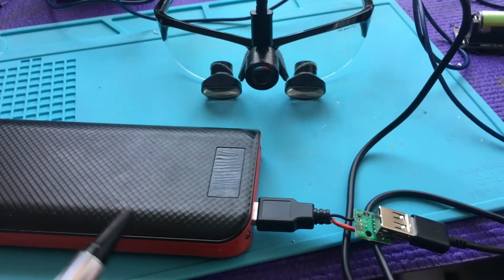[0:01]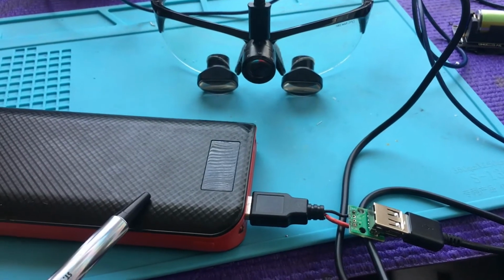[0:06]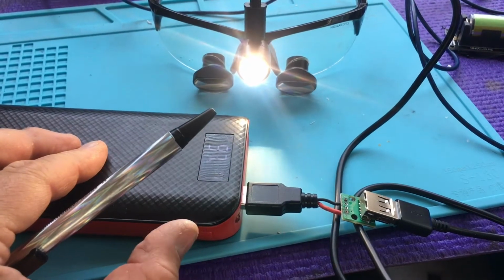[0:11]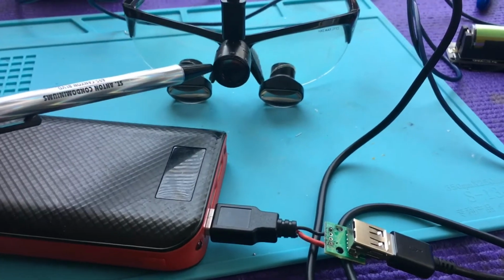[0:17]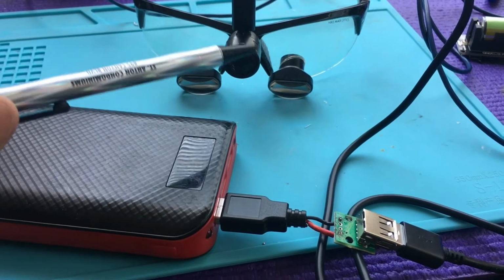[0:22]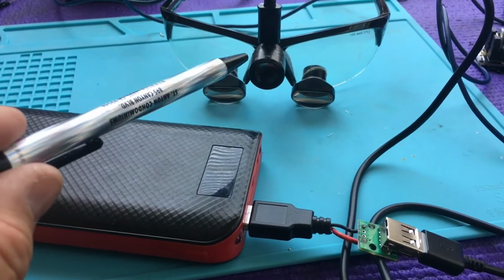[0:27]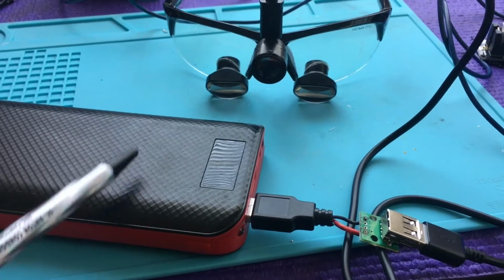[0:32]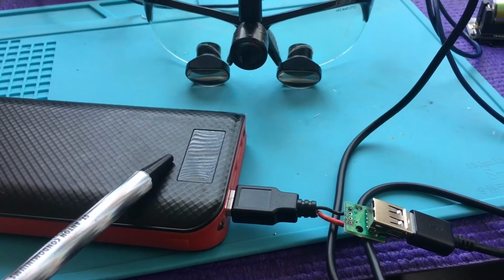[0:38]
How can we power Designs for Vision loupe lights with a standard battery pack? Here's some Designs for Vision loupes with a 5-volt light that most hygienists and dentists use. We're going to connect in this video these glasses, these loupes with the light, up to a standard 5-volt charger pack used for cell phones.
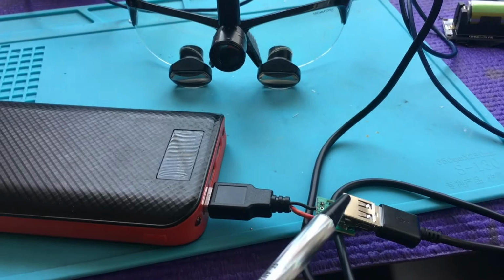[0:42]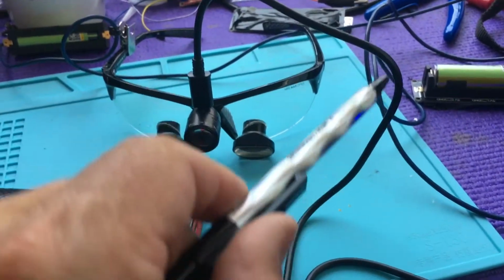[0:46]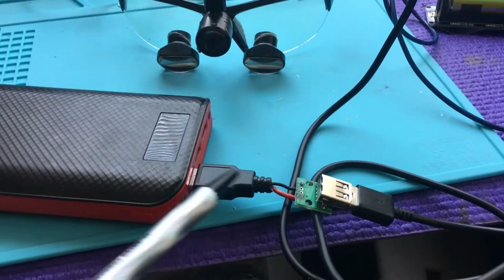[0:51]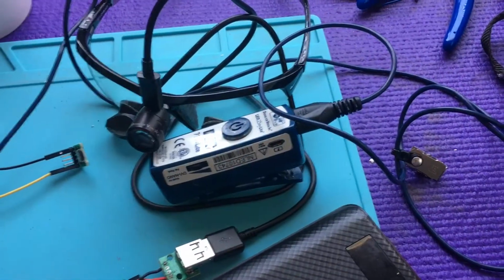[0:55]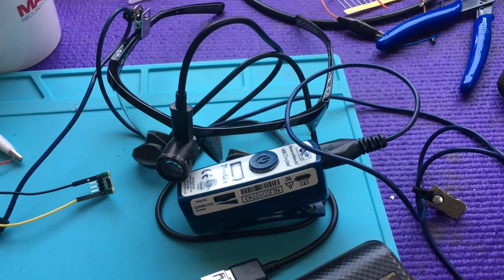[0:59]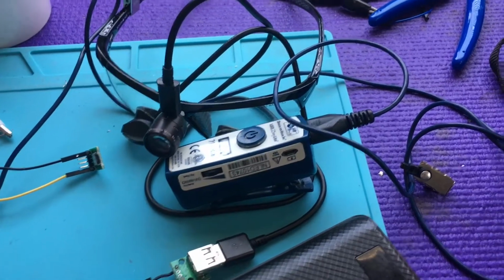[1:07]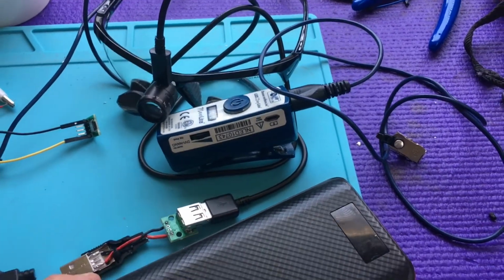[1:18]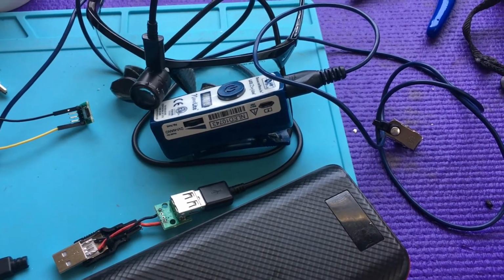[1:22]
And the only thing we're going to change is this crossover cable, and we are going to use a standard Android USB cable for this experiment. Stay tuned. Video on how to test your Designs for Vision components so you know which thing may not be working before you try to order parts. The other thing is you may want to rig something up in an emergency to get you through the day so you can order the parts and wait for the parts to come, maybe saving you some emergency freight.
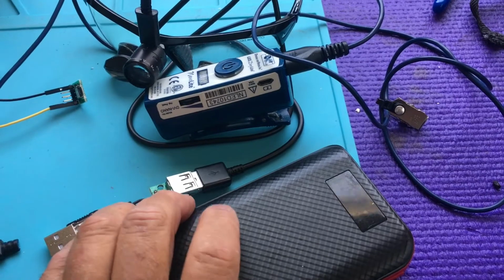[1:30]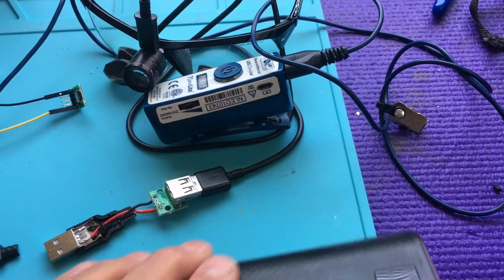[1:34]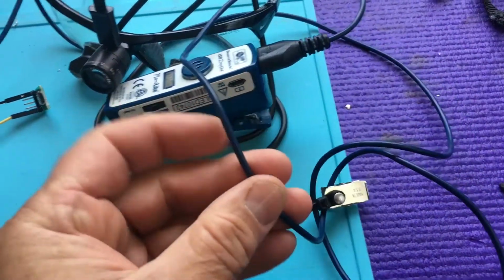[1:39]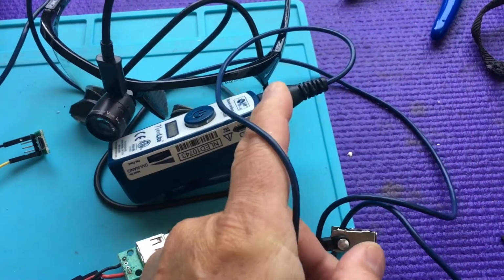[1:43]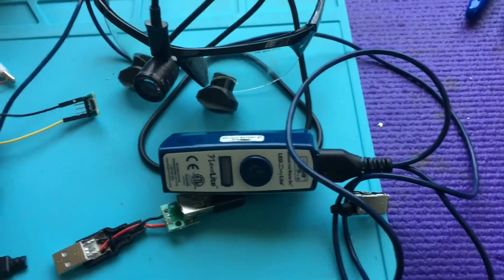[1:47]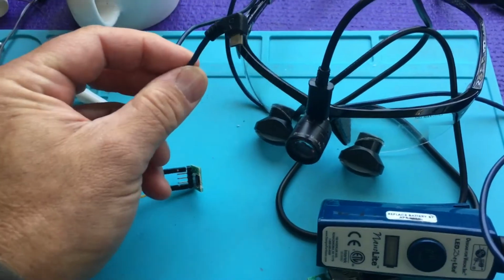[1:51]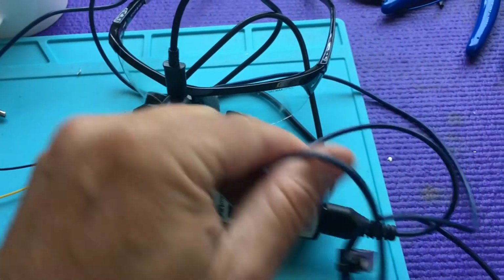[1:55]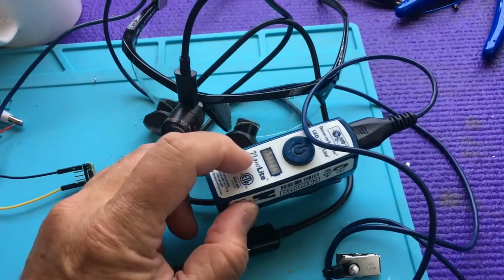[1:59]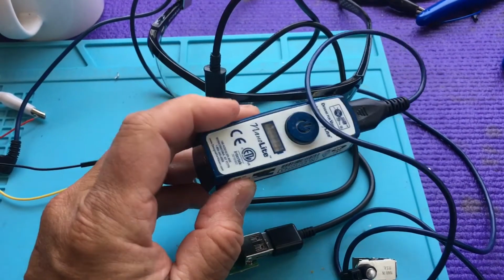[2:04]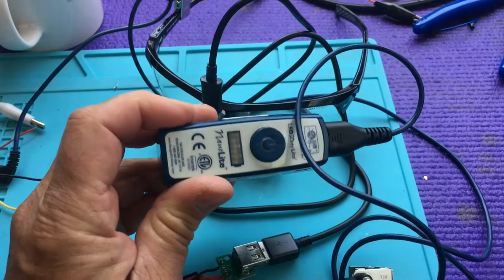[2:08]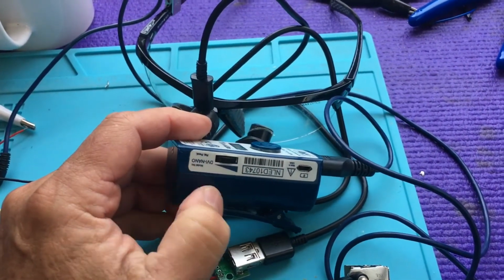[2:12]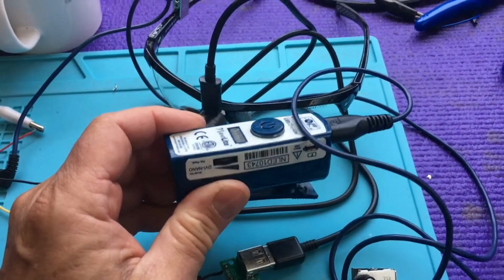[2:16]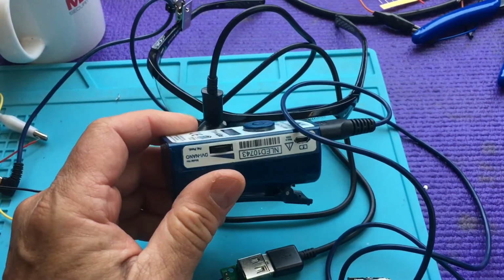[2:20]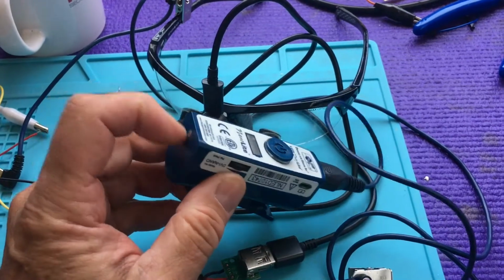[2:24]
So what we're going to discuss in this video is how to test each of these components. Potential failure items are this cable right here that runs to these glasses. The cable could fail, these connectors on each side could have a problem, and this power supply could also fail. This is a high quality power pack with a standard lithium ion battery similar to an 18650, but a little smaller, in this pack here.
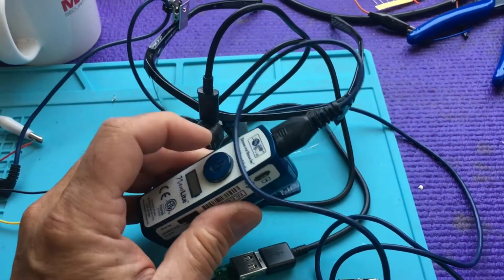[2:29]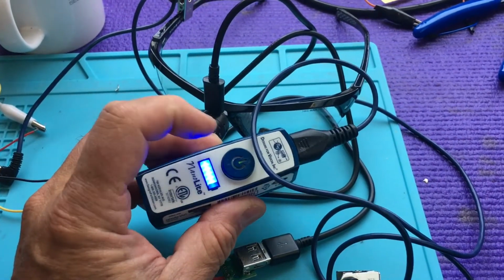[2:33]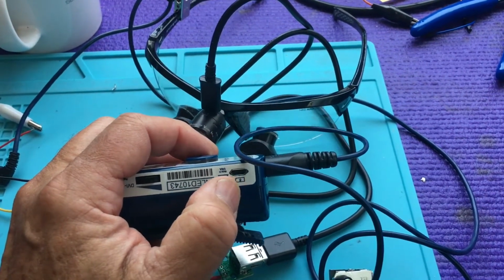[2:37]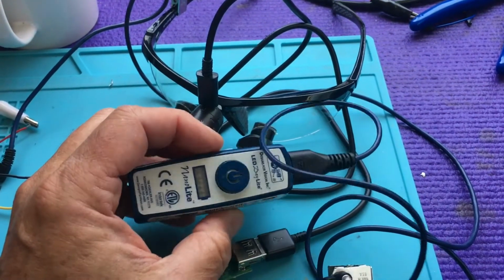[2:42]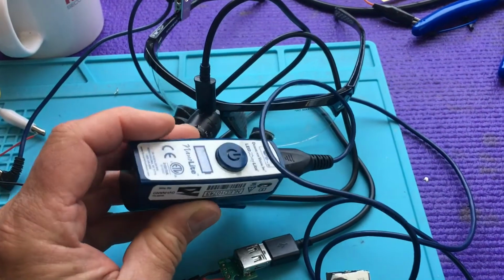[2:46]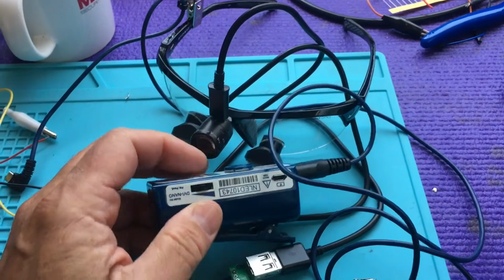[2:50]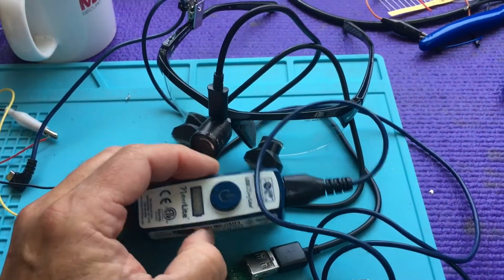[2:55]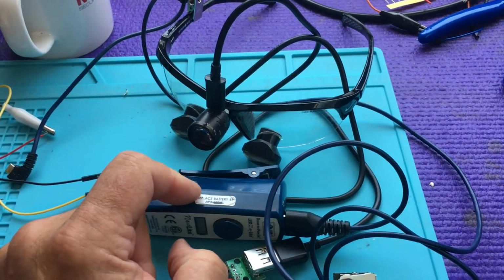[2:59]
Of course, this thing is really high quality. It's got a gauge on it. It's got the standard micro USB connection, and it could fail. The battery could go bad, the connectors could go bad, you could drop it, which happens a lot, and this thing could fail and you're sort of out of luck. So how can we tell whether this thing has failed?
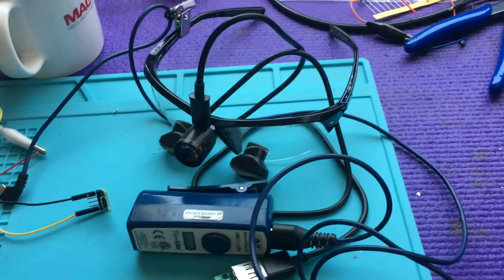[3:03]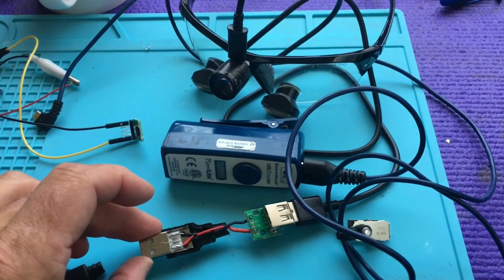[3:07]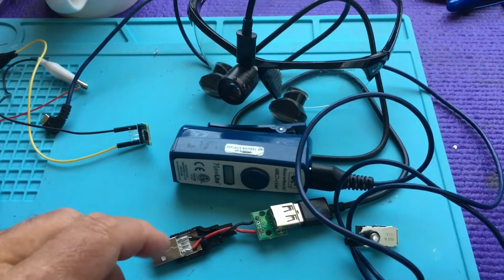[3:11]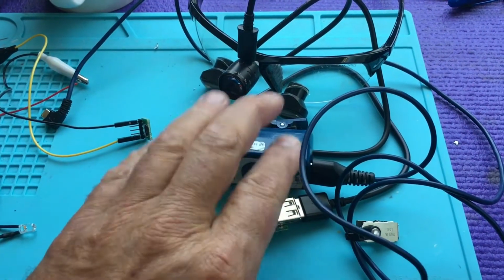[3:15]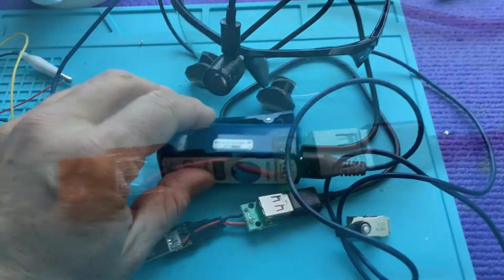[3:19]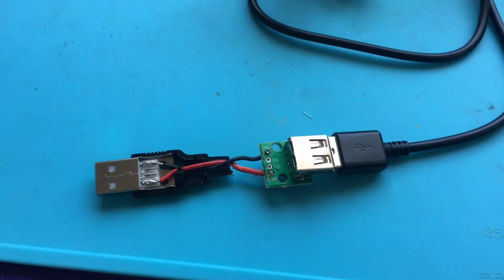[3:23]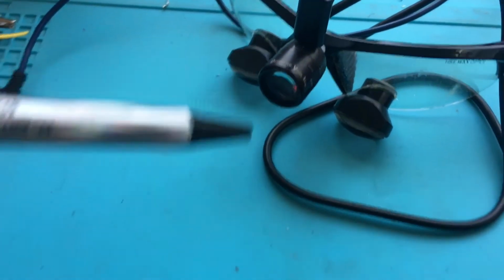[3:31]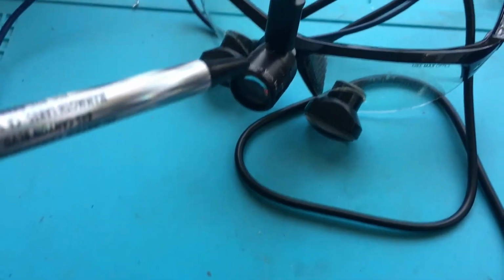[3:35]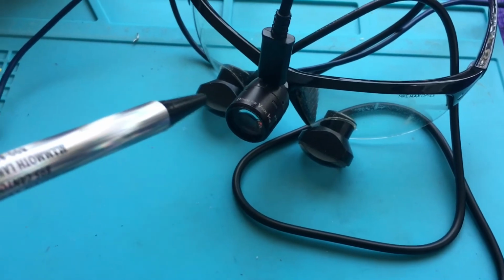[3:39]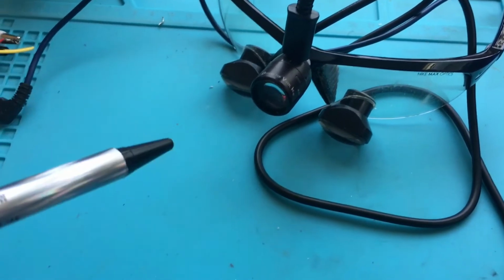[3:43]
So let's discuss how we could test this light with nothing else that's provided by Designs for Vision. Now, just because I've tested this doesn't mean that you're not going to blow up your stuff. So here's where I'm going to warn you: you could blow up this light if you do this wrong. However, I think they did a reasonably good job of design here. It's a high quality light. I think they've designed some protection in, but I do not know for a fact. You could blow up your stuff.
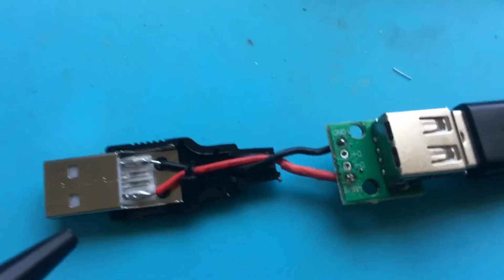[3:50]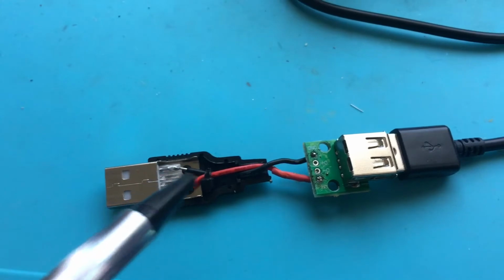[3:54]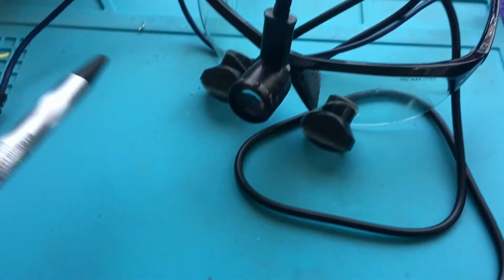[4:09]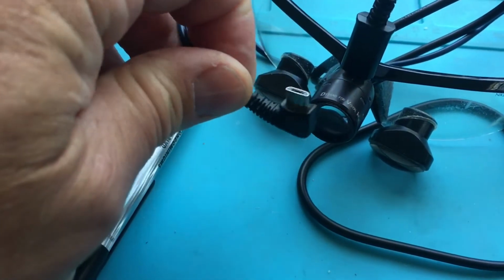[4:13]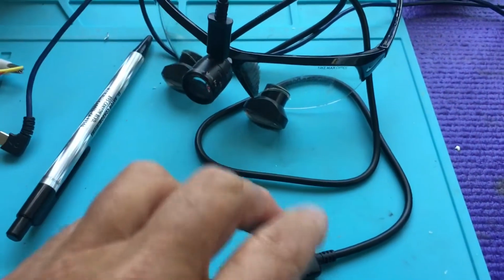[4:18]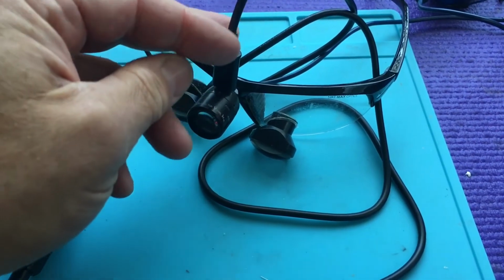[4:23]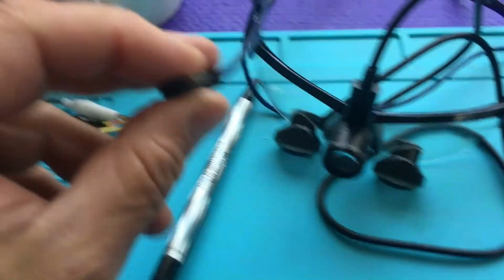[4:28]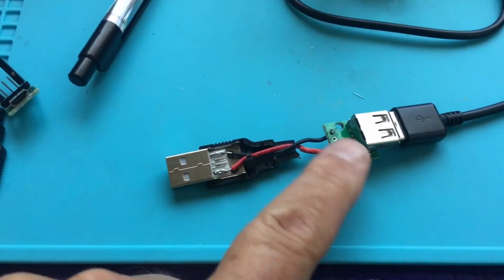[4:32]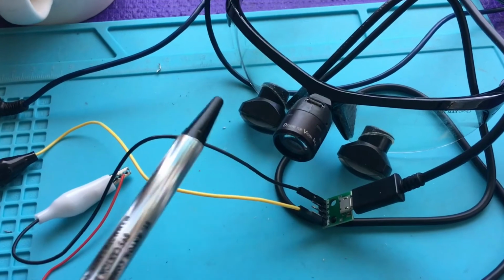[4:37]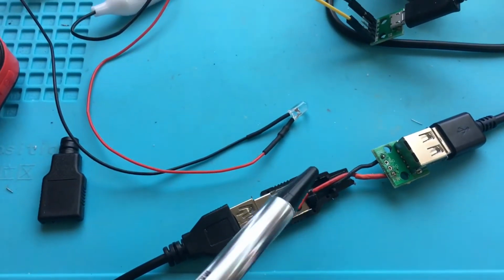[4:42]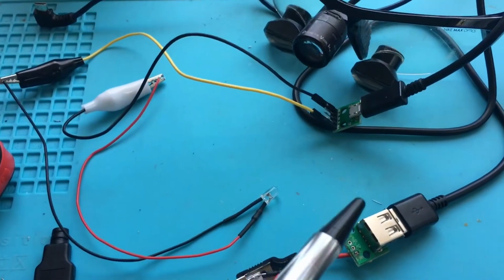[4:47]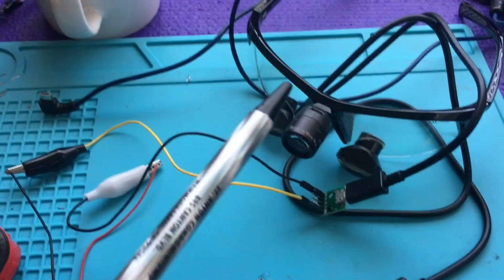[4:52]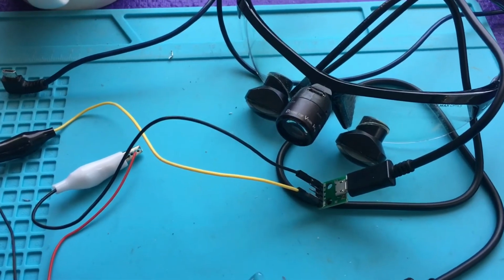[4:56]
So what we do here is we have soldered a crossover cable in this configuration. We're basically reversing negative and positive, and then we're going to power up. Instead of using this cable here, we're going to use our own micro USB. This is the same kind of cable that you can find for Android phones, but I had to engineer this crossover here. We want to make sure we don't blow this thing up with this crossover, which I don't believe you'll do if you mix your crossover. I believe you could just plug a standard USB in this connection and you'd be okay, but I don't think you should do it.
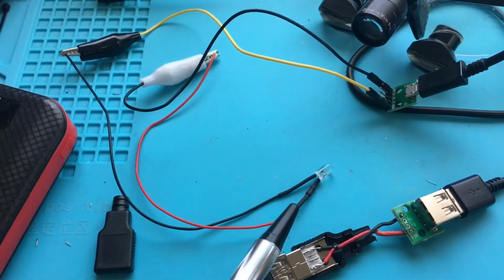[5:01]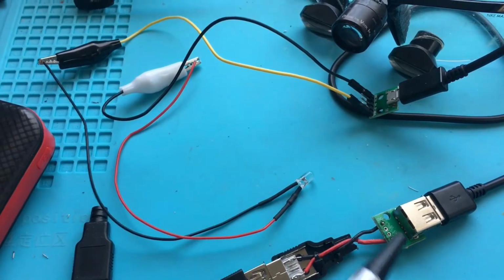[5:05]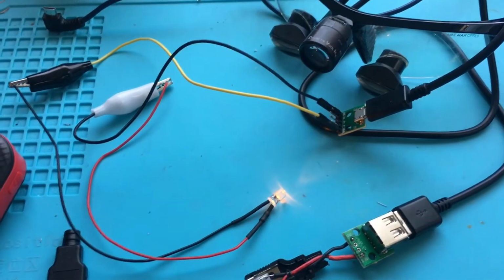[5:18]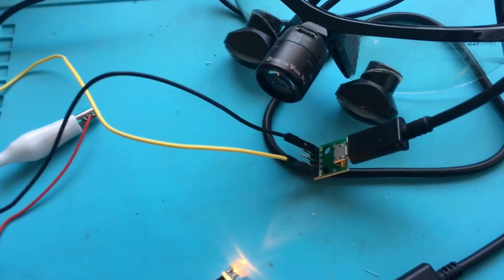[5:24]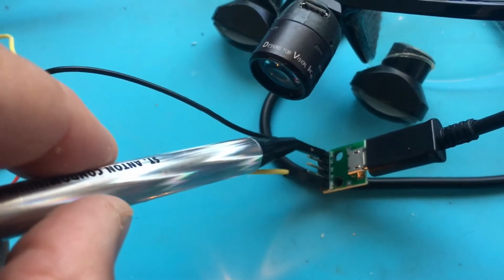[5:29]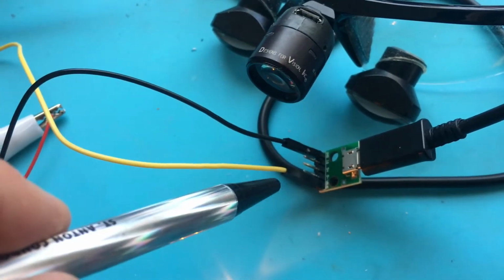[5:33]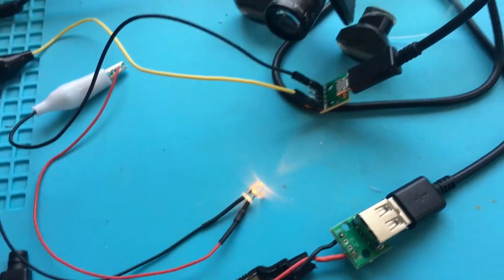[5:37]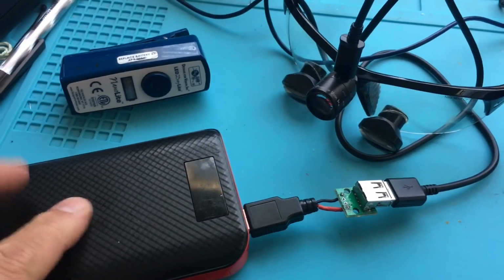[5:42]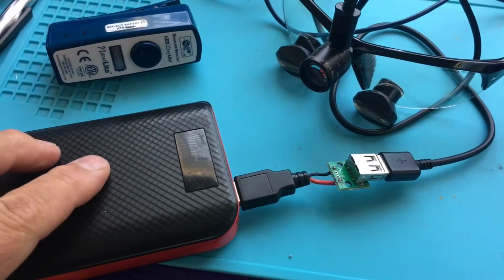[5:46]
What I do, just to make sure that my reverse cable is working properly, is hook up this LED in reverse. It's a standard LED with a resistor in it, so I know that this LED is wired correctly. What's normally a ground is positive, and what's normally positive is a ground, and that's why I'm running this LED. So that worked.
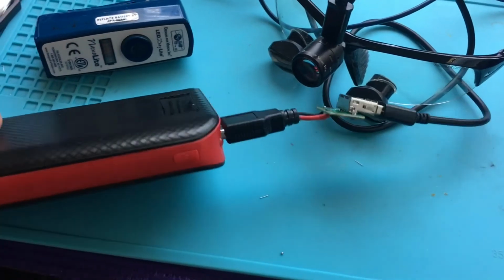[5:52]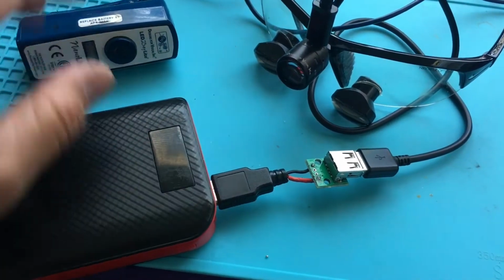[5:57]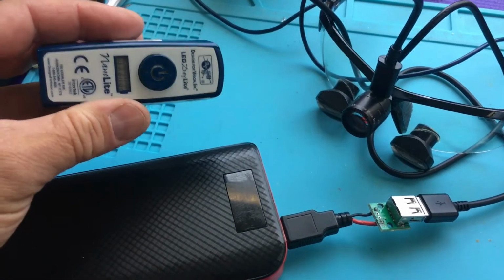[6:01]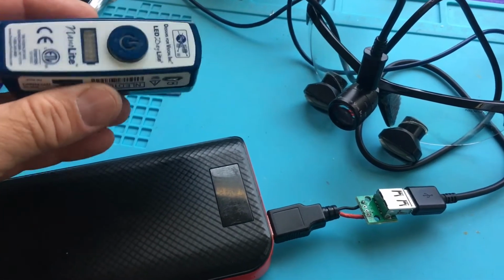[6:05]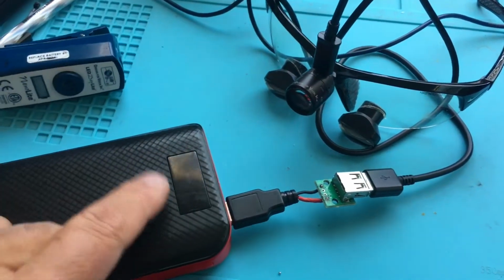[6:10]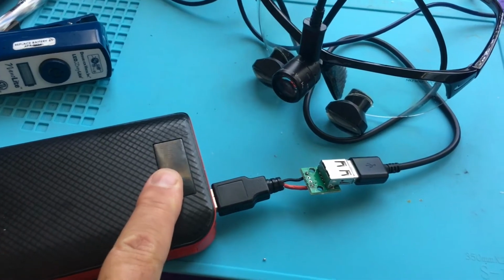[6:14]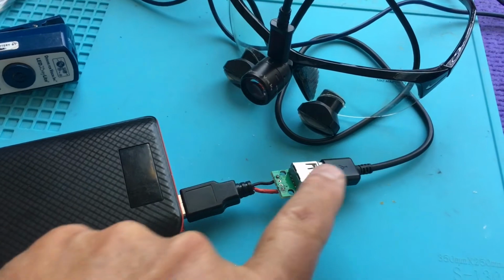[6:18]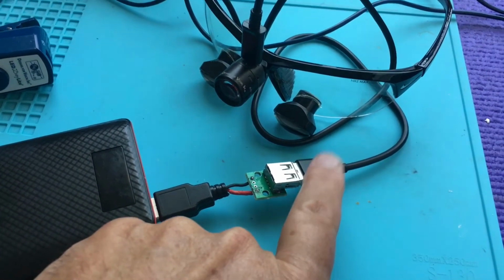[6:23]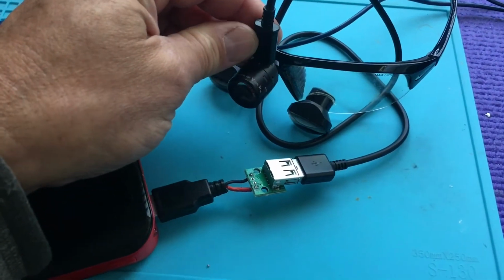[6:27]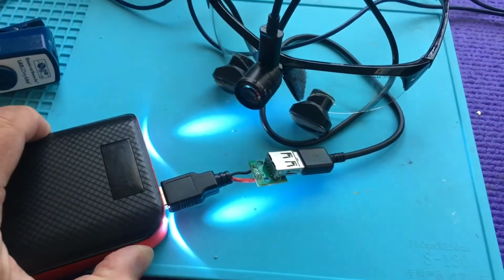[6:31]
So for the next test, let's hook up a standard power pack that you'd get with any of your iPhones to charge them. Let's use a standard power pack that outputs 5.1 volts like we've seen, and test to see if we have a problem. Again, we're going to use this separate battery power pack that you can commonly buy, with this crossover cable and this standard USB micro cord that you can buy with Android, and plug into this light. So let's turn this on.
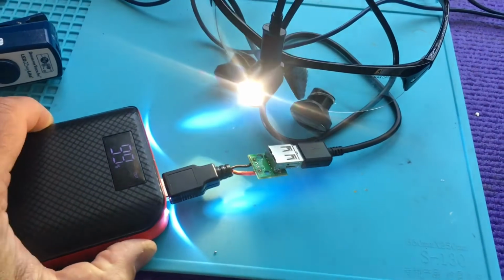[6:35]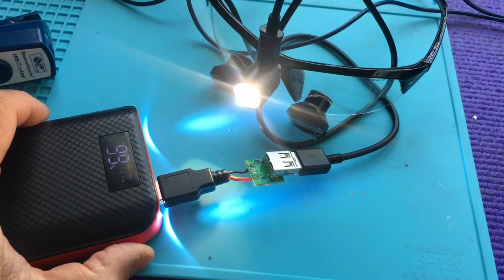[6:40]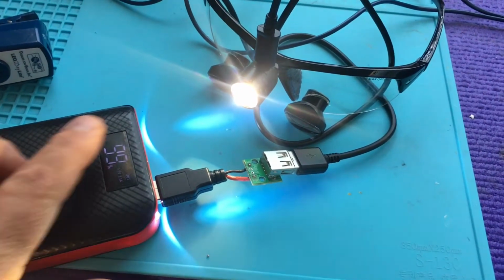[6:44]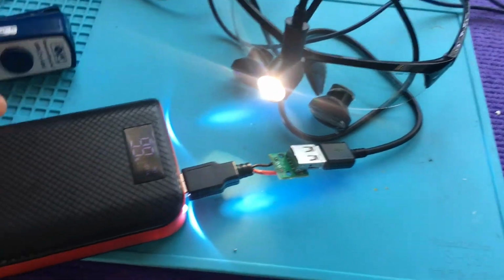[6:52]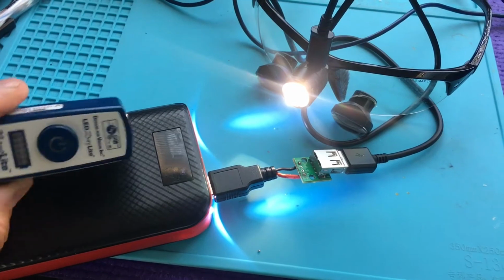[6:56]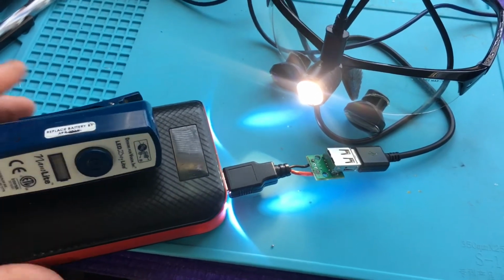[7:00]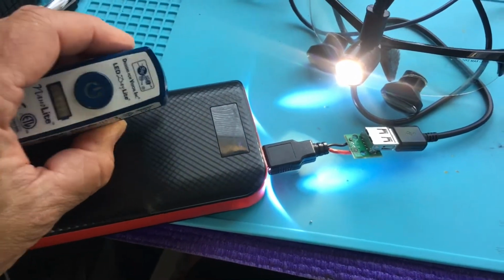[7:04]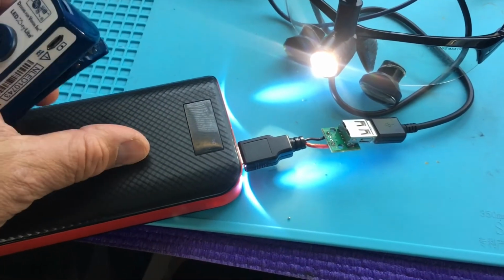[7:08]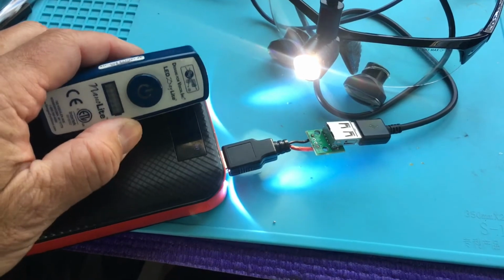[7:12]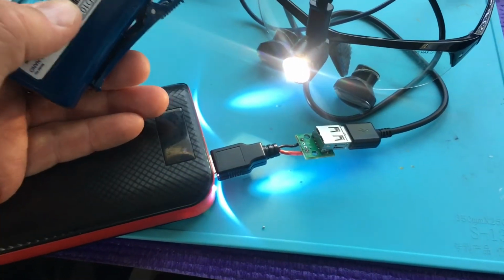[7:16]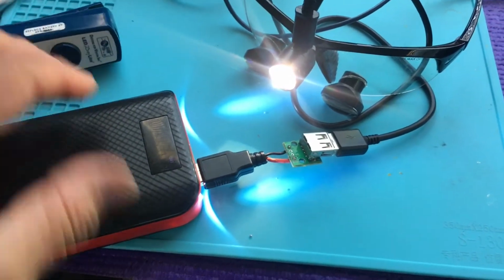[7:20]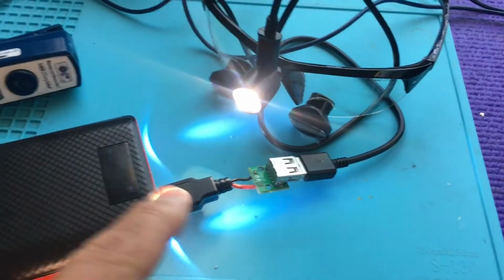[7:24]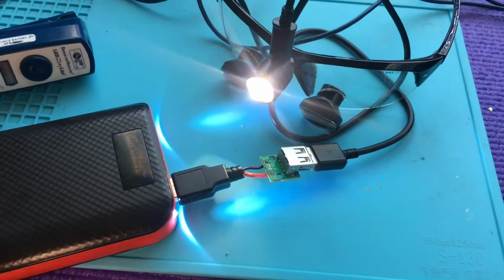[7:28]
Okay, so we're successfully turning on and running this setup, this light. The brightness is the same, and it's running off of this standard power pack, a readily available, inexpensive power pack. And of course, this is just way too big, but we could get a smaller pack if we wanted to test how long we could run with a smaller power pack relative to this. That could be some of the testing we could do further. And all you have to do is make this crossover cable here, and you can do all this testing.
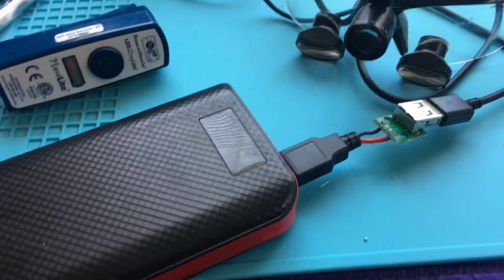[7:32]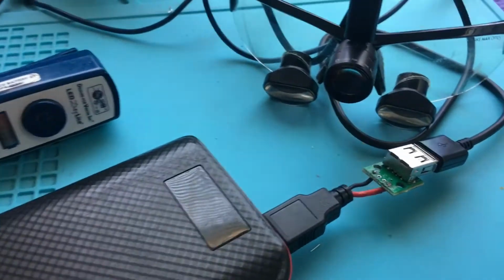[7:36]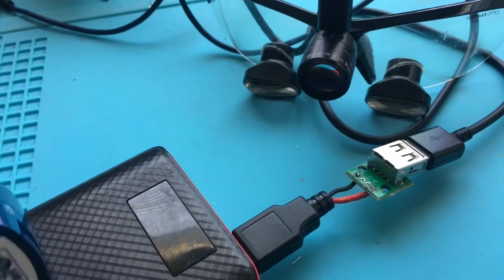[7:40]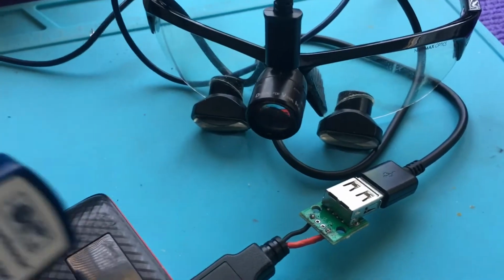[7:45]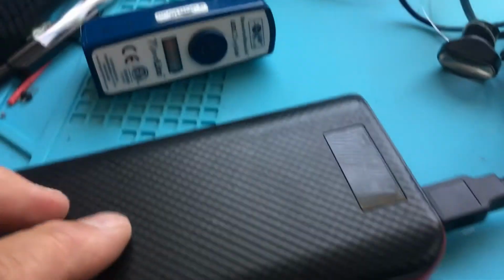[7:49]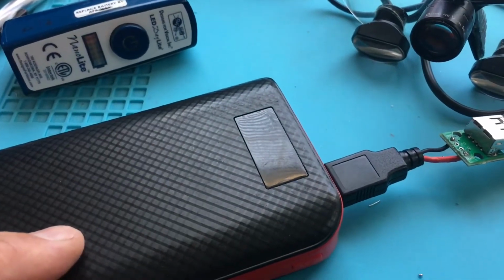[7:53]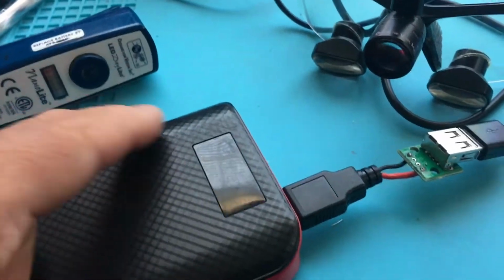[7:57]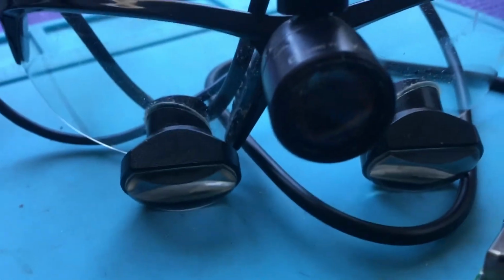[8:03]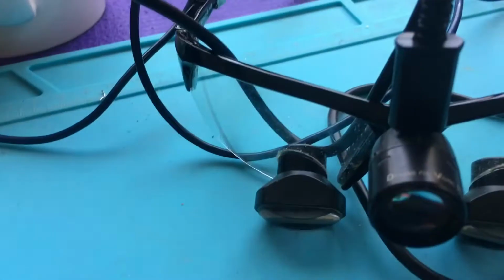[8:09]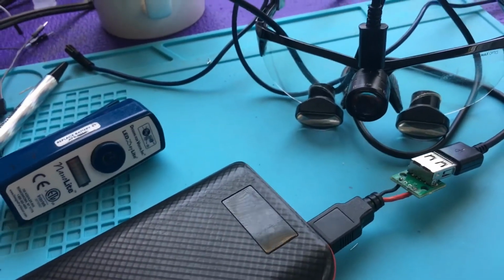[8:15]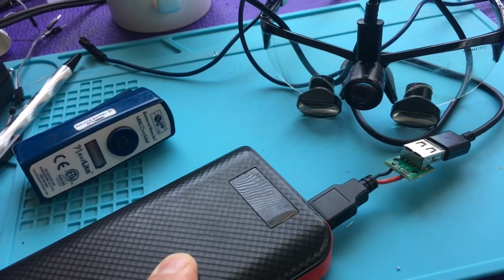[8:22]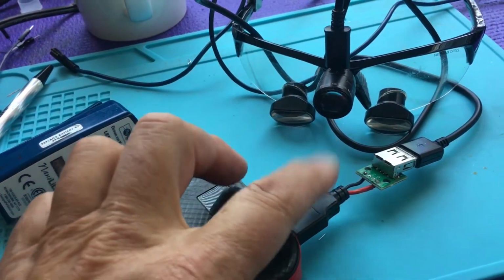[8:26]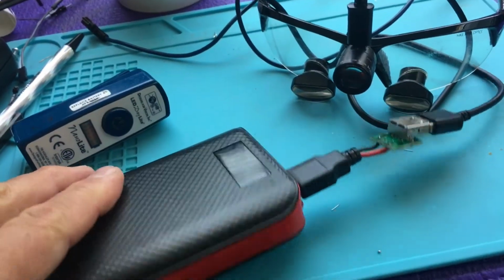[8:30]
One odd thing I noticed about this test, of course, we're just testing now to see if this power pack is good and this light is good. There's no problem with the light. However, it looks like some power packs with a lot of intelligence in them might be testing to see if something is connected all the time, to know whether they need to shut themselves off. And I'm getting this little blink, blink, blink out of it when this power pack's off. So I just wanted to let you know that this appears to be standard behavior, and it probably depends on the intelligence of the power packs. So a less intelligent power pack with just an on-off switch would probably be better. The other thing you might have is a switch in line here where you could just switch on and off, but this is an inexpensive power pack.
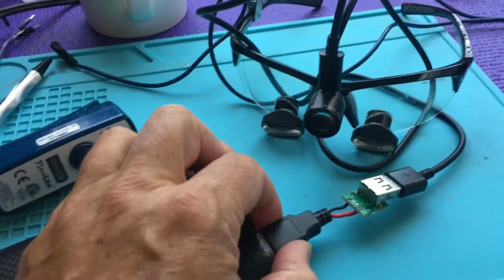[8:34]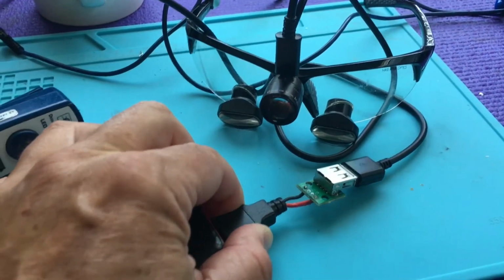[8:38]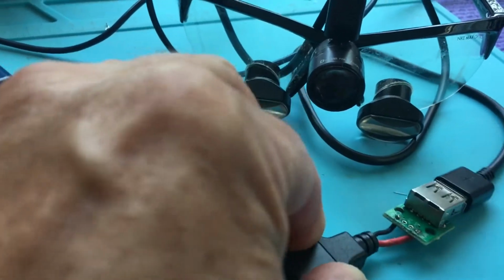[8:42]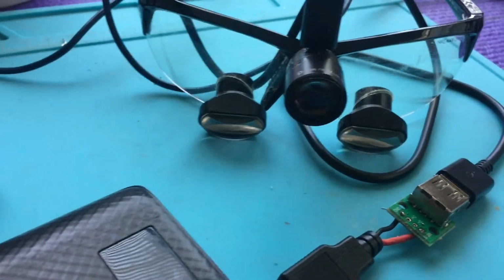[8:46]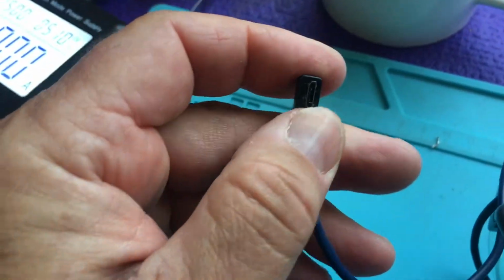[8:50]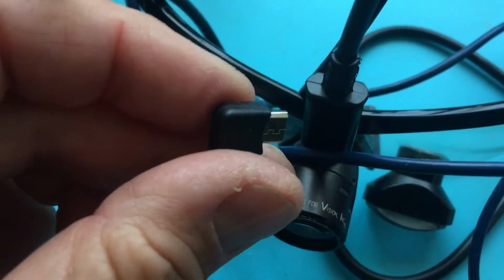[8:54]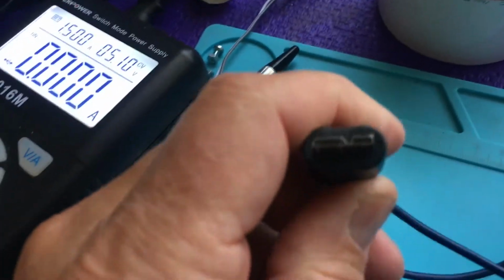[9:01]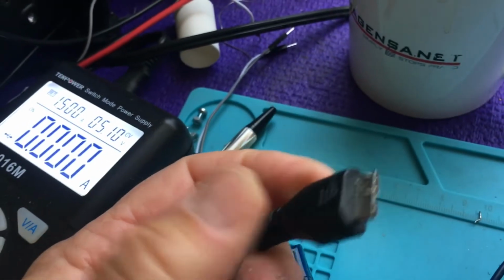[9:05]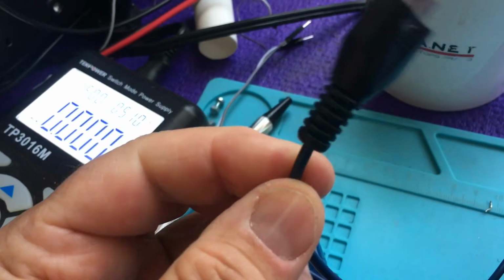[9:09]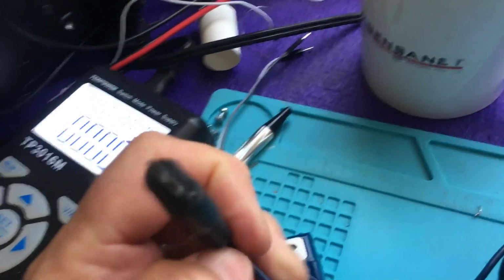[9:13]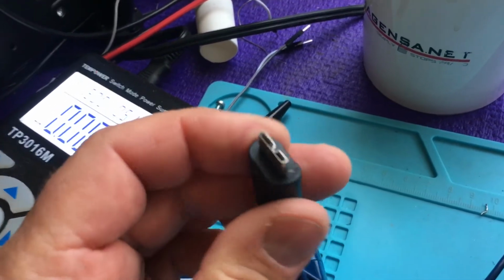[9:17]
And of course, what I would recommend after you do your testing is you just disconnect this and see if I can get it disconnected. Okay, there it goes. And yeah, everything's fine. So these are great cables. This, of course, is a standard cable, just like the one that charges an Android. This is the light end of it. These are really flexible, and they're long, they have a very long life, but they do wear out. I guess they're around $65, but great cables. They take a while to get.
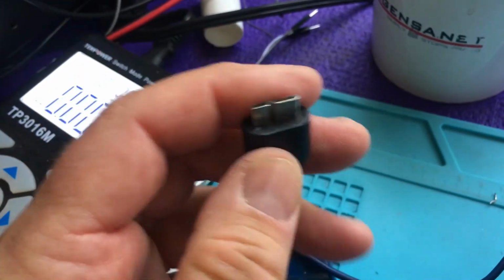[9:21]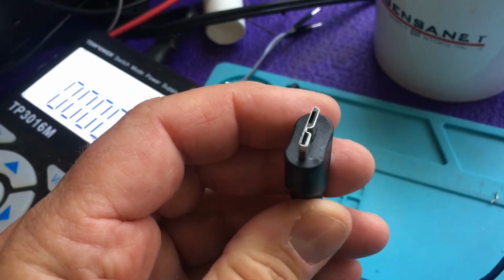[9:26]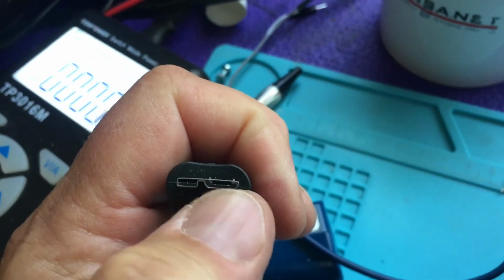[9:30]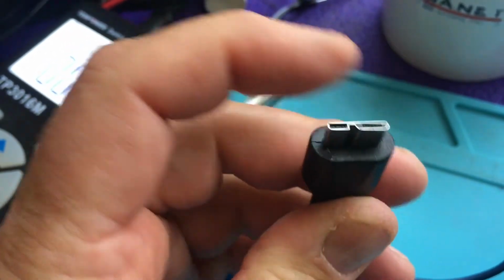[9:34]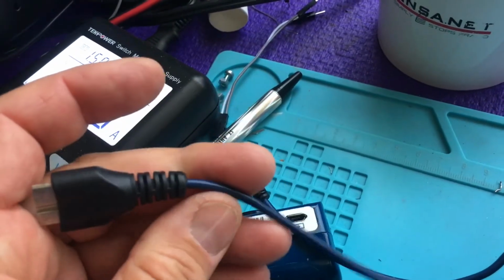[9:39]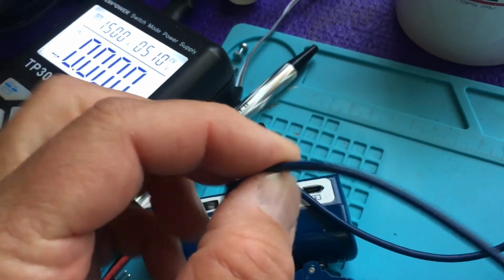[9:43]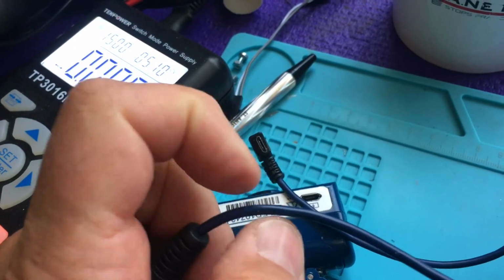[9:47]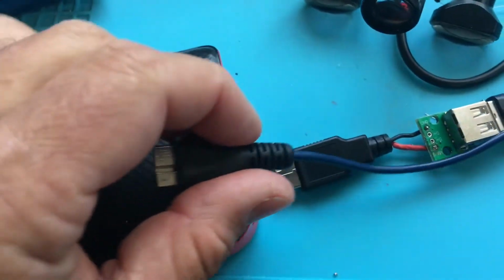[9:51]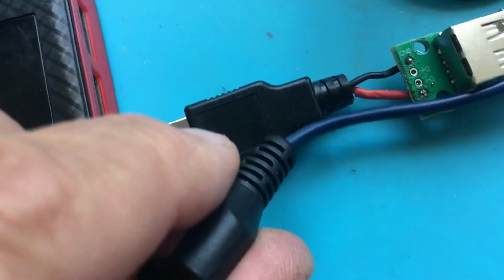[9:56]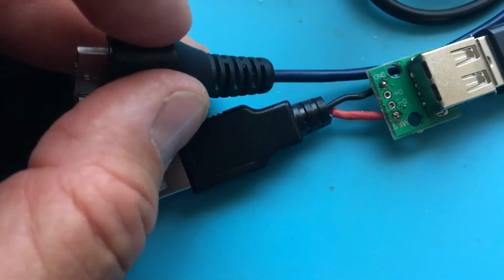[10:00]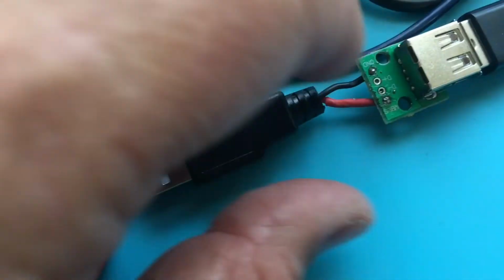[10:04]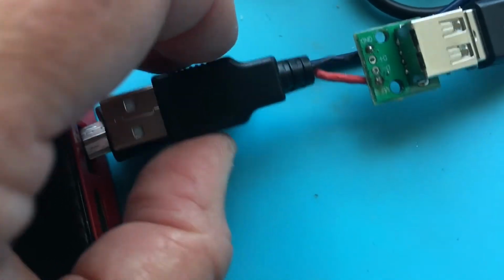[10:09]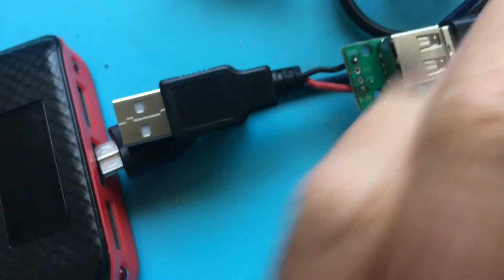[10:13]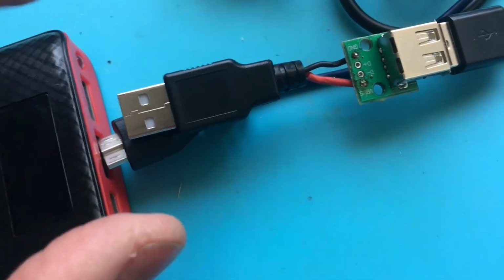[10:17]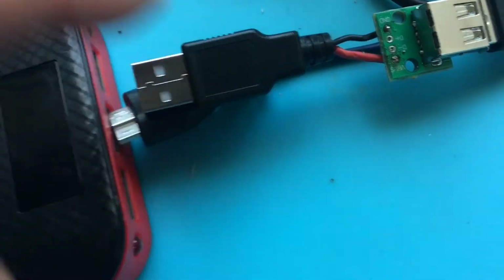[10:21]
So what would happen if you had one of these fail, and you needed to come up with something quickly? These aren't readily available, the configuration here. And the pinout here is unknown, so I haven't checked that out. But it would be possible, I guess, to sever this end here and then put on one of these cable ends, like here, and then it would kind of look like this without the crossover. We could just run our own. We could make our own cable that would hook to a power pack, and it would just require two connections, and you just have to make the connections right, like I did here.
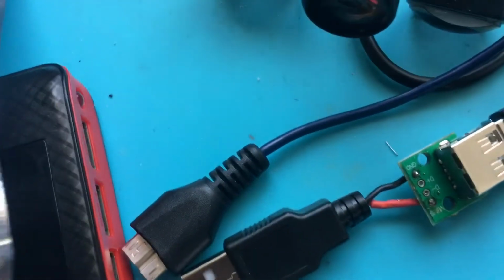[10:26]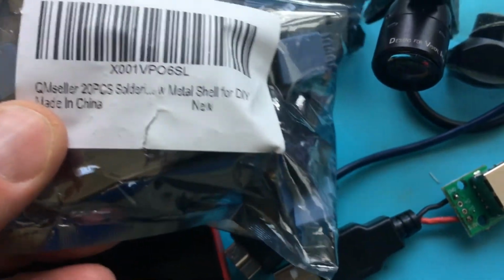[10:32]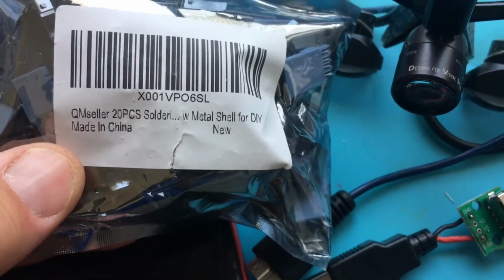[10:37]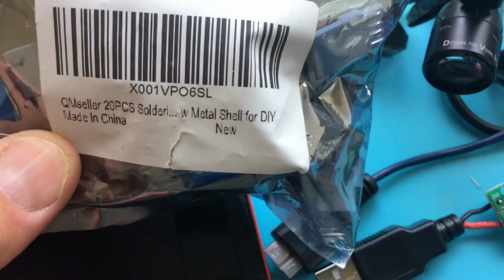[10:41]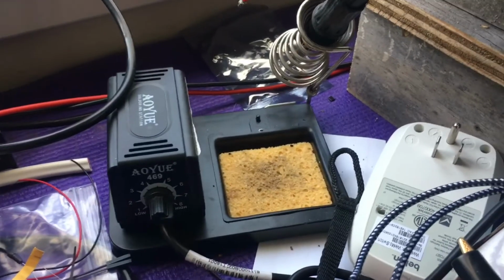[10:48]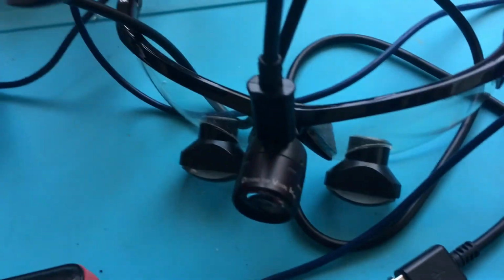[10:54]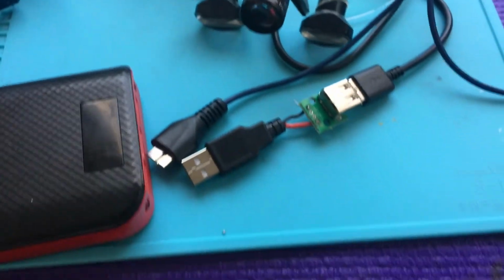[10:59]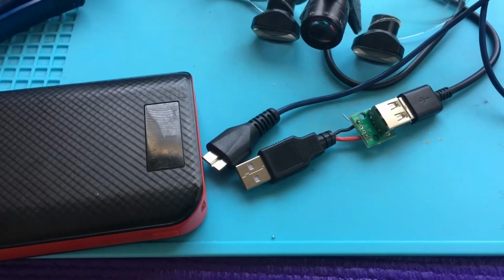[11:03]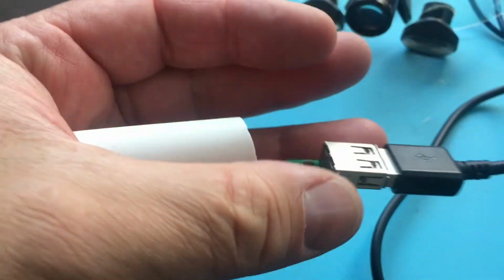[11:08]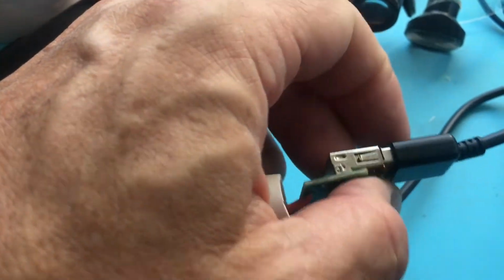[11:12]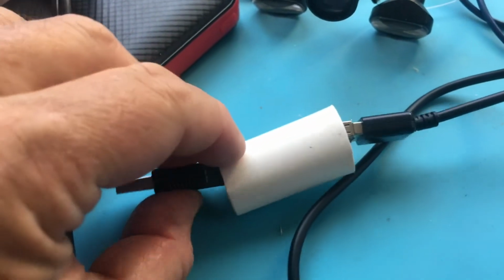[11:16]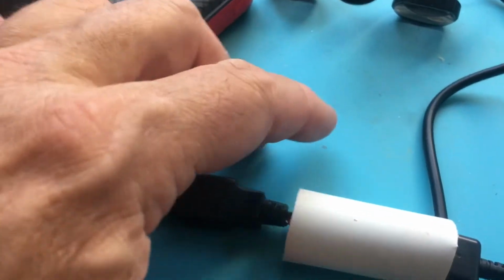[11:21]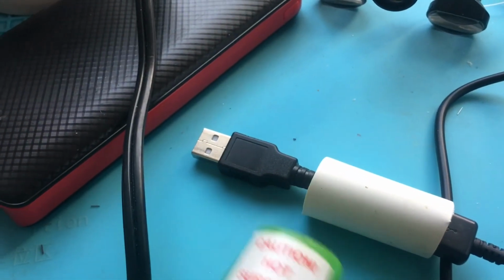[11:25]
And it would involve purchasing something like these, that I got on eBay, I believe. Anyway, they're readily available, and ideally, you do need a soldering iron, which will cost you about $8. And then you need some solder. And then you can have your test setup or emergency setup. And I think that could work for you. Now, if we wanted to make this more permanent, we could get some shrink tubing and put the shrink tubing over this assembly here. And then just get a heat gun and put the heat gun on it.
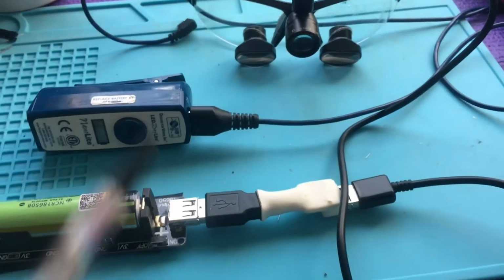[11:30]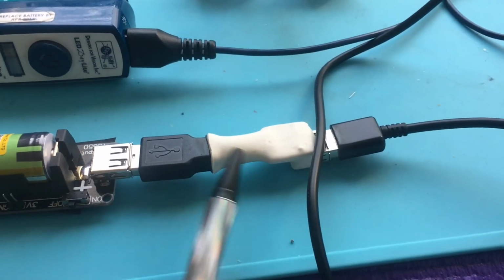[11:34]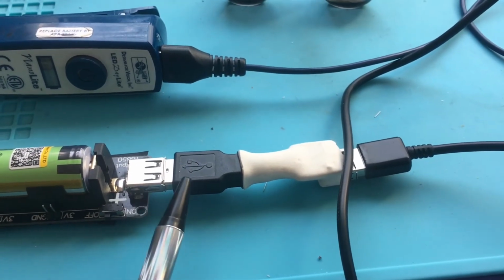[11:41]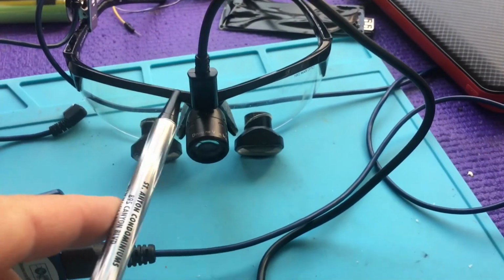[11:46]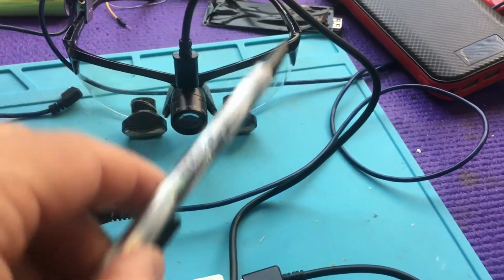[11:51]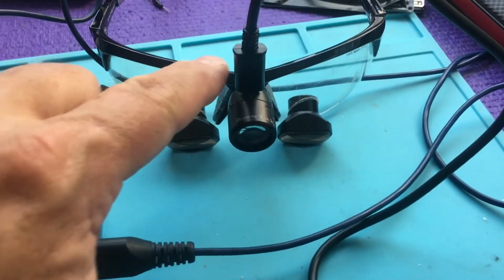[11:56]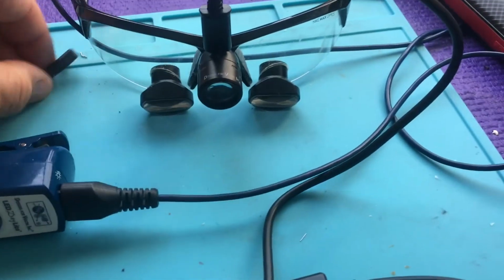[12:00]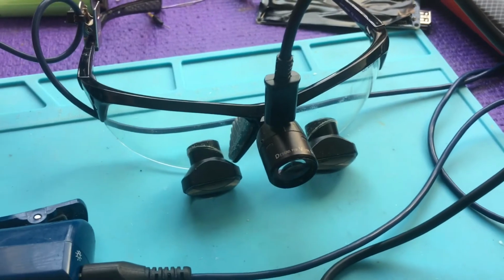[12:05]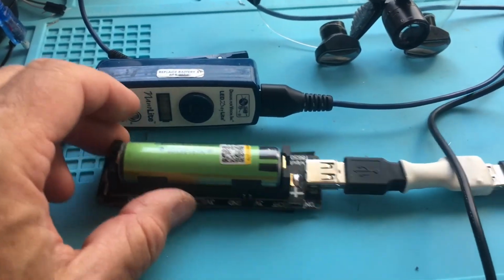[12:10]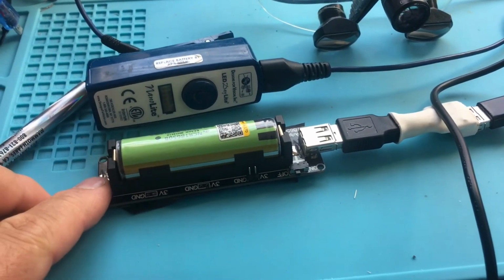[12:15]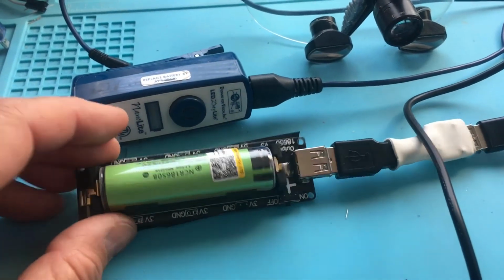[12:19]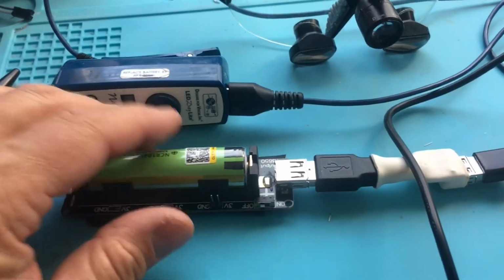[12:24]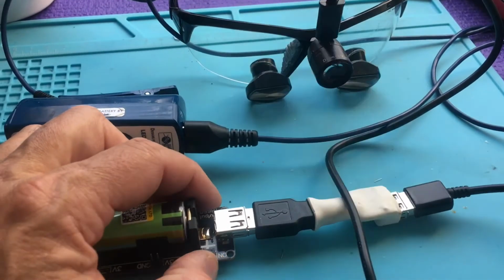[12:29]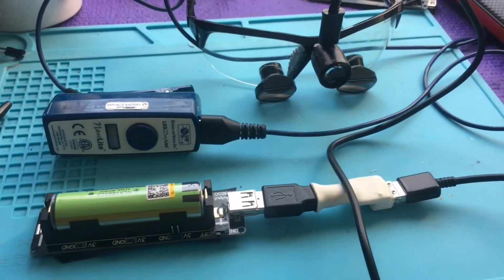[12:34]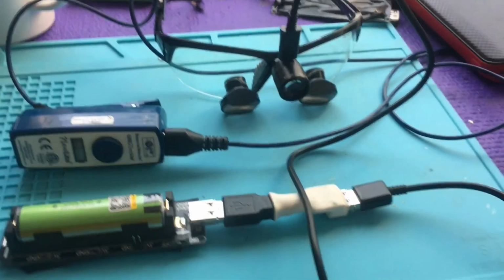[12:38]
Okay, here's the final setup. I've got the crossover cable here with a heat shrink on it. That's basically crossing +5 and - to feed into this light here with a standard cable that's available on Android. And you could get, for instance, a right angle connector here that would be similar to this, supposing you needed an emergency setup last minute. And here's roughly a module that I have. It's an 18650 shield that provides the same function as this, although this is way better, higher quality. But it just has a little light on it. It just illustrates the concept of having a power pack here, if you needed to just throw something together in an emergency.